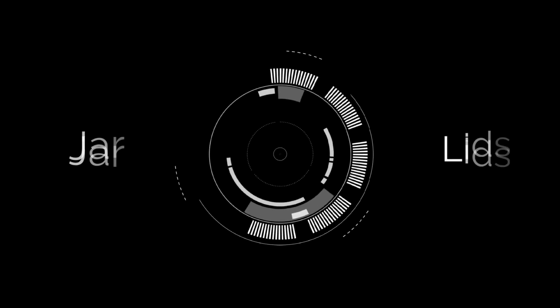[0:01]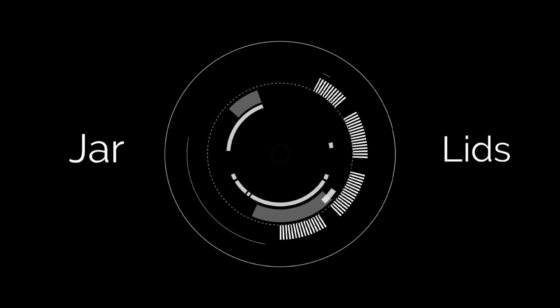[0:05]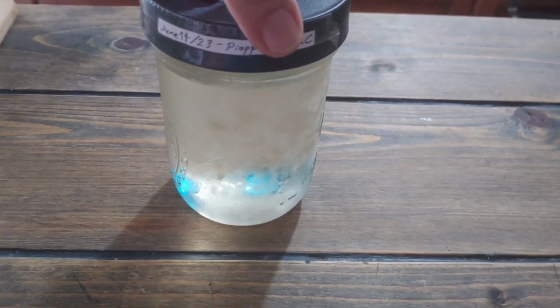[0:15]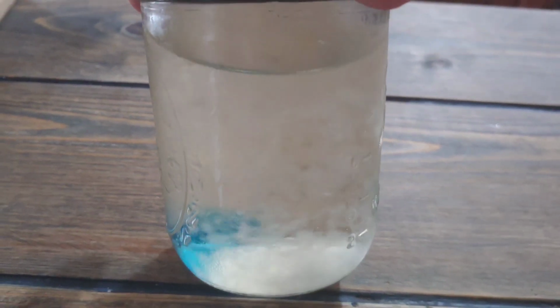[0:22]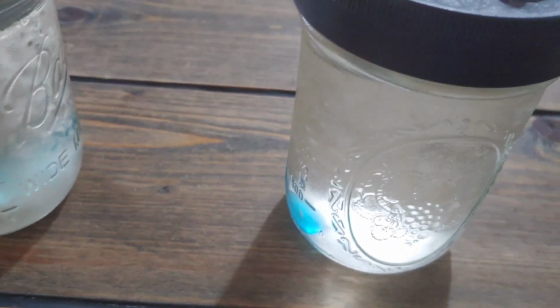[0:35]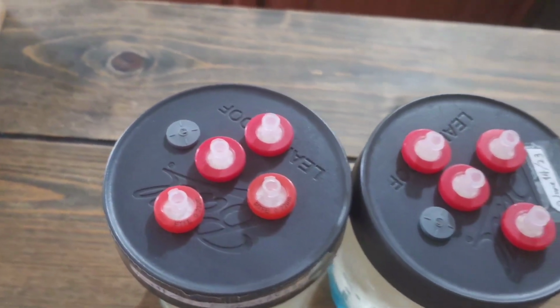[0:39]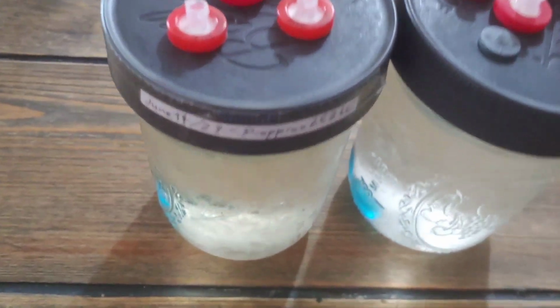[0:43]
All right, I'm gonna talk a little bit about liquid culture. First, I'm gonna show you how to make your modified lids for these jars. And it's not difficult at all.
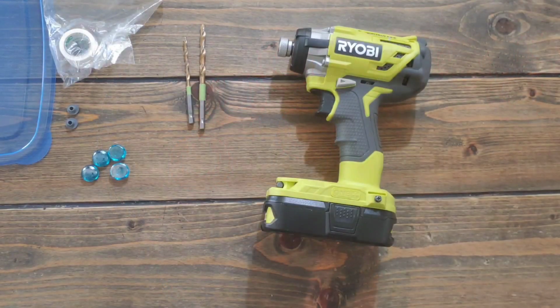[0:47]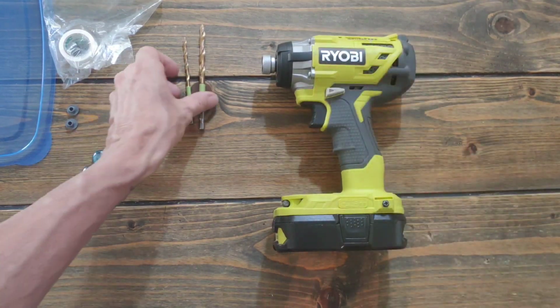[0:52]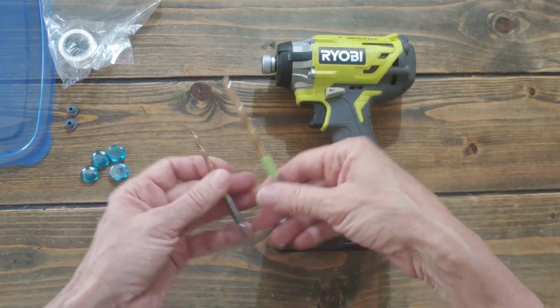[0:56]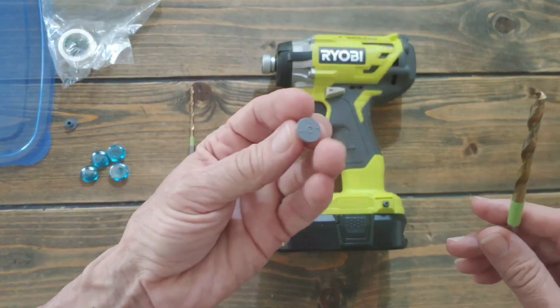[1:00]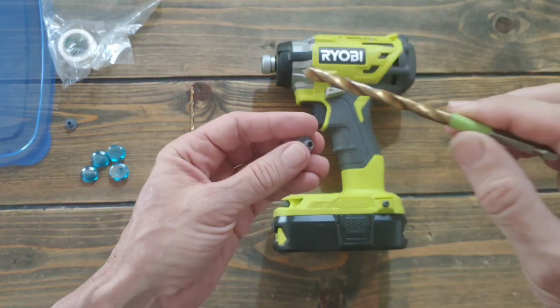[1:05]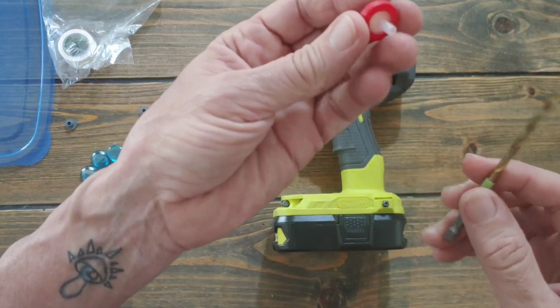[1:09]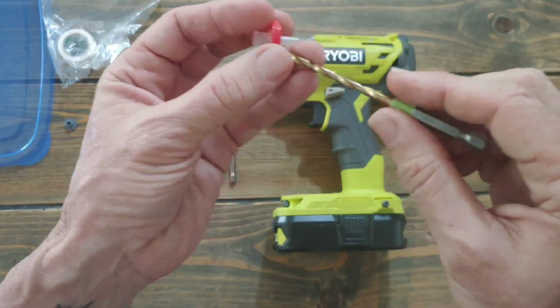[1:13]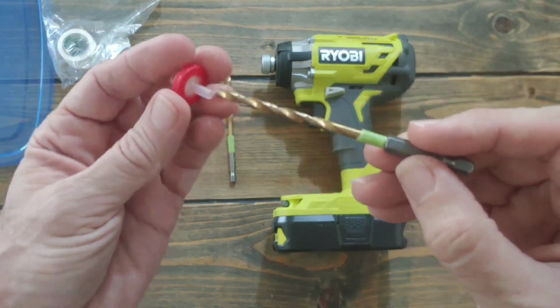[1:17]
Now you will need any drill, some drill bits. For these smaller injection ports, I use a 1/4-inch drill. And for these smaller filters, this, it's worn out. I think it's a 5/32.
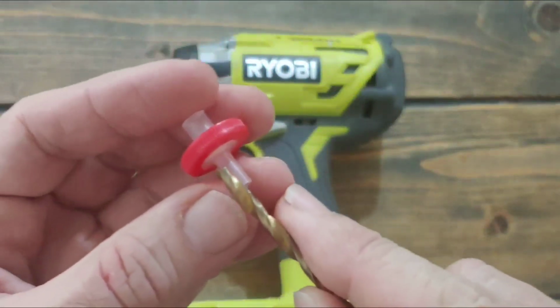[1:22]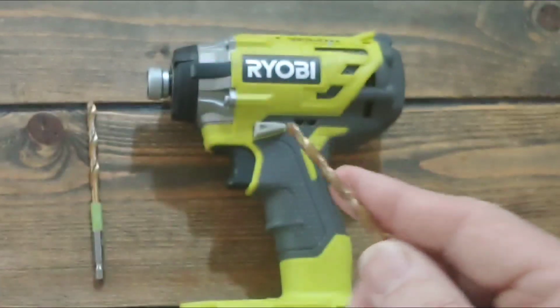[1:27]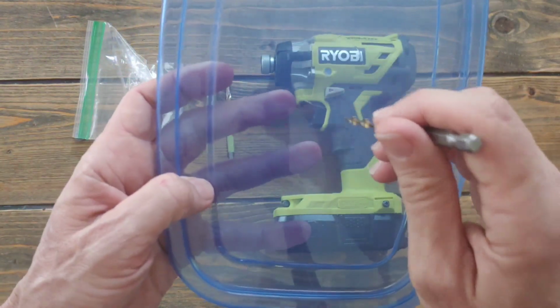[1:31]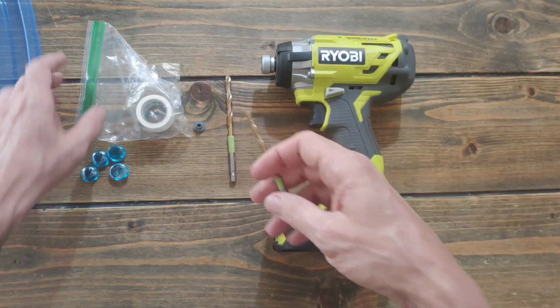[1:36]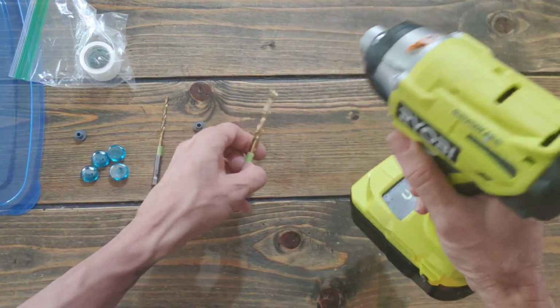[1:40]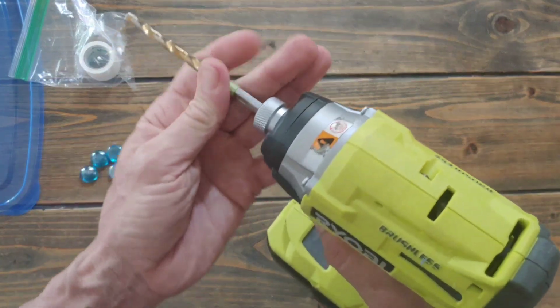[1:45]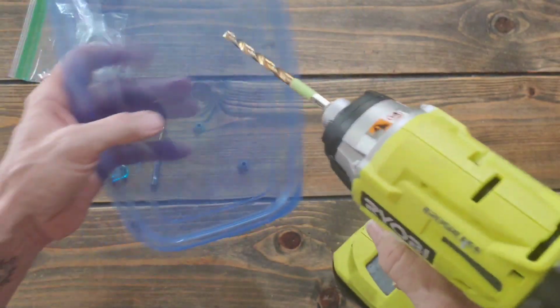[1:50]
But the way I figured out which one to use was I just eyeballed it like that, put it on top, and then I tested it in any old piece of plastic that you can throw away, of course. So I'm going to show you how to test it. Let's say I still didn't know what size I needed to use, and I eyeballed it and I thought it was a 1/4-inch.
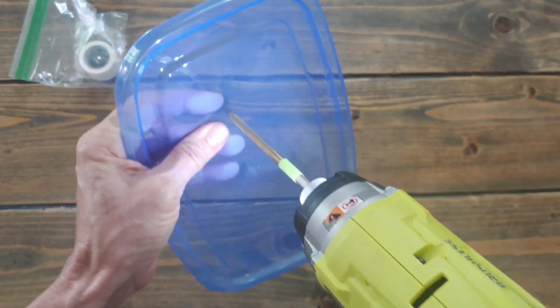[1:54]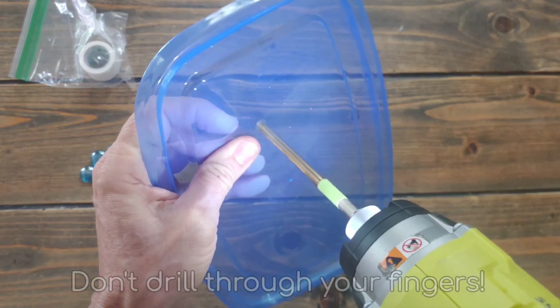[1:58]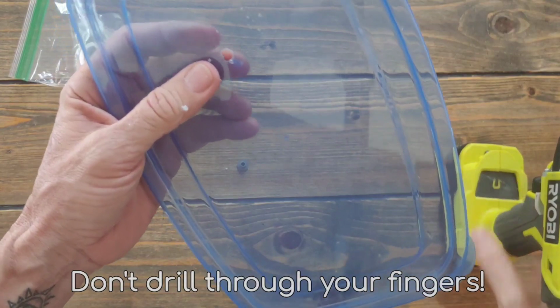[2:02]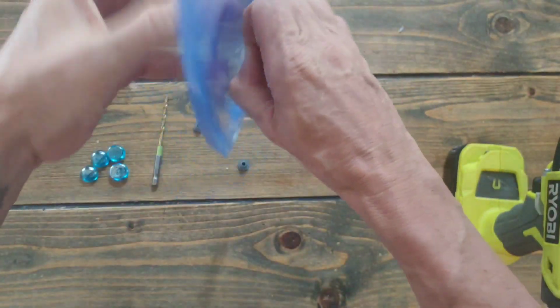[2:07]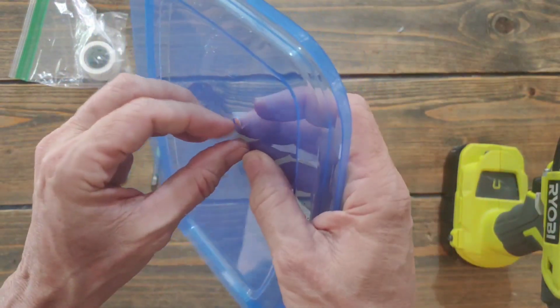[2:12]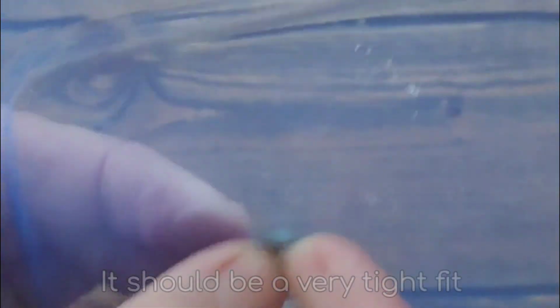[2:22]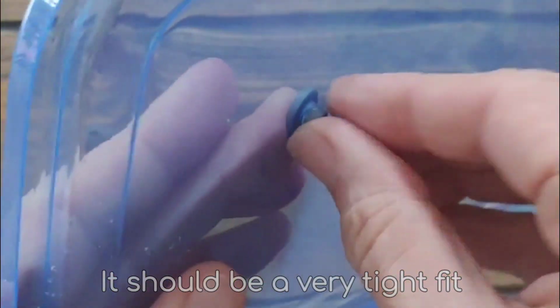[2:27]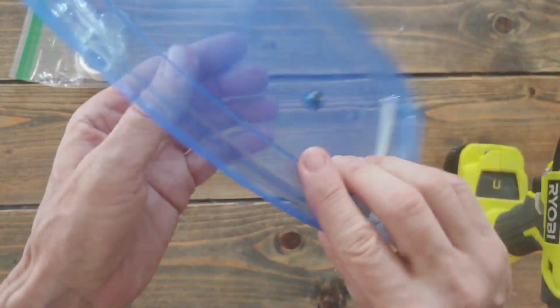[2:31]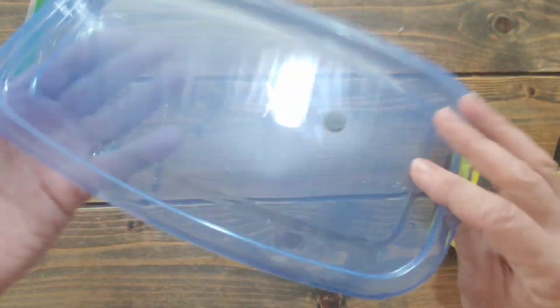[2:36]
Don't drill through your finger. Take your time. Clean up the little plastic bits. And now, take this thing, poke it through. Press, and then you pull on the other side. Just pinch it and pull. And that's it, it's perfect. So now I know 1/4 inch is good for this.
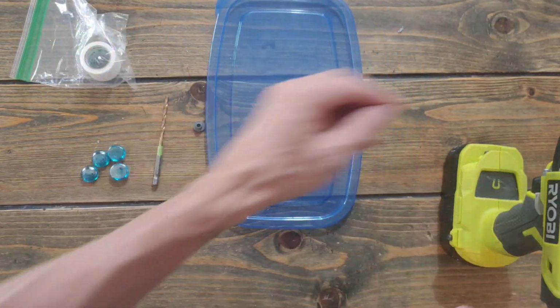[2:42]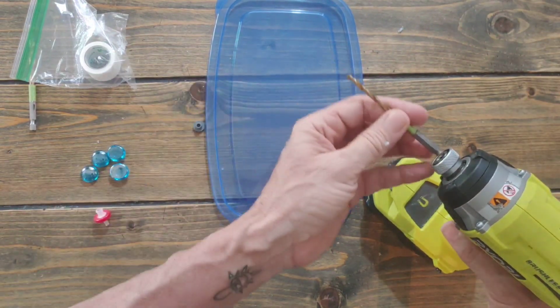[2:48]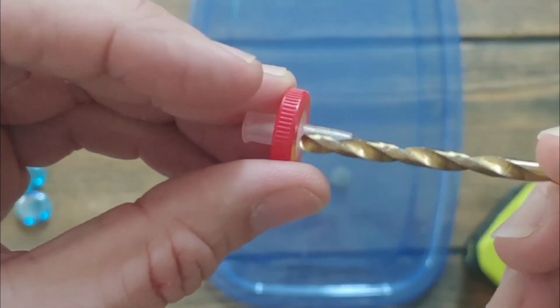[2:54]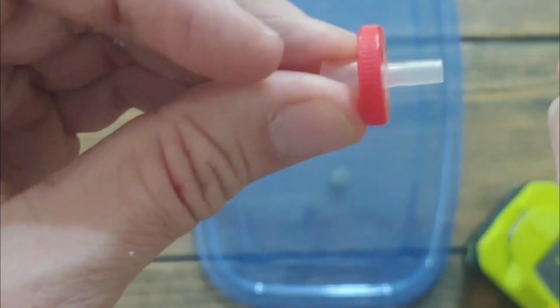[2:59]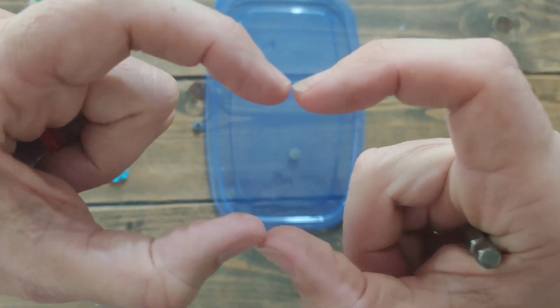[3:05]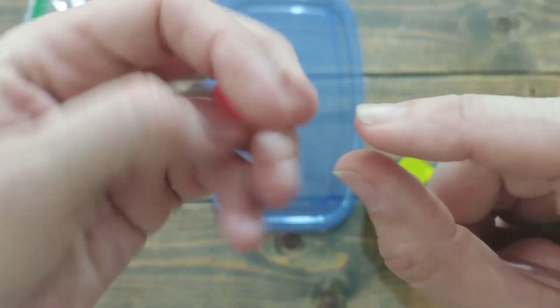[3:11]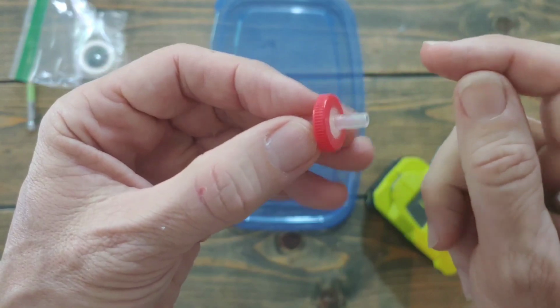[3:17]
Same thing for the other one. Say I eyeballed it and I think this is a good size. You can't go too big because you probably can't tell, but it has a little divot like that. This straw looking piece, this little cylinder, has a little divot, and that clicks into the hole if you do it right, which keeps it in place. You don't have to glue or anything.
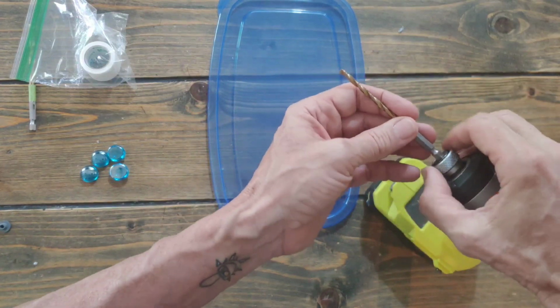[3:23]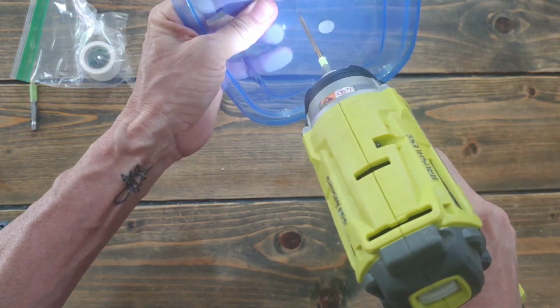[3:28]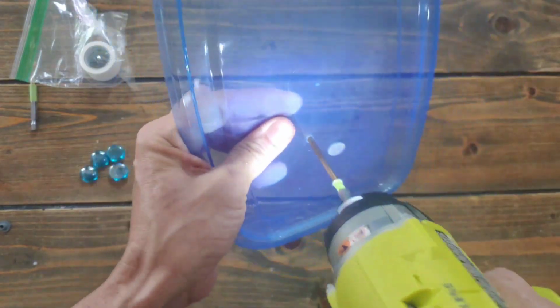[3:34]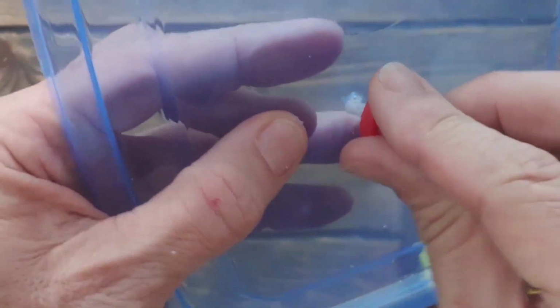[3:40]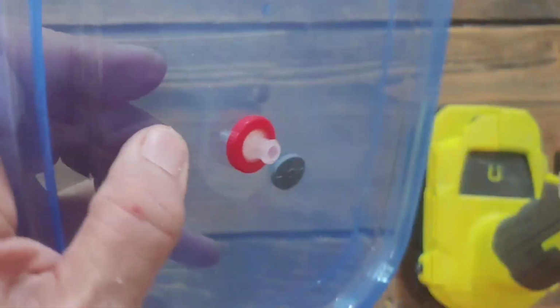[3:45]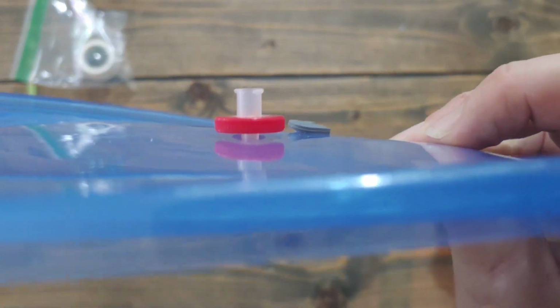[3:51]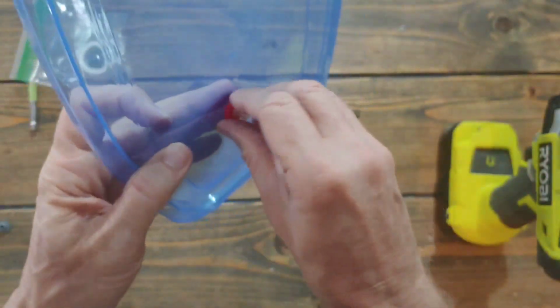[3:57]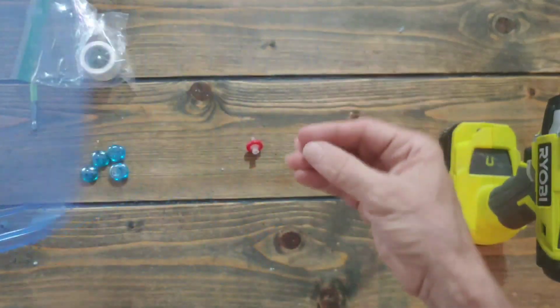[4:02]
So let's say we want to test this drill bit. Come here. Don't drill your finger. We press it in. And you can feel when it clicks and it doesn't want to go any further. See a little space there? It's that easy. So then this you can just pull off. Same with the filter.
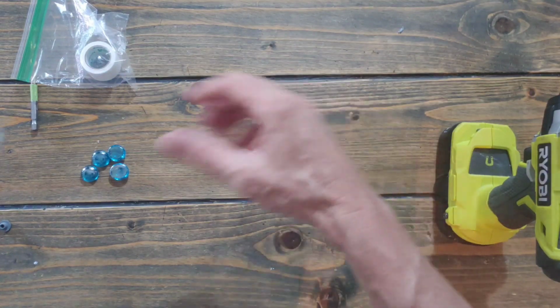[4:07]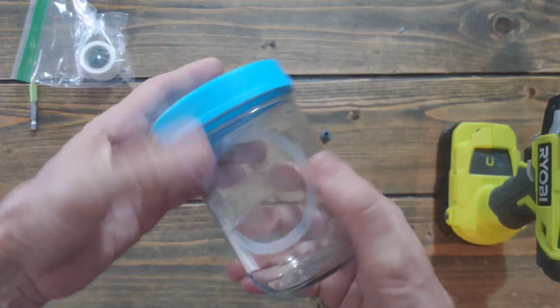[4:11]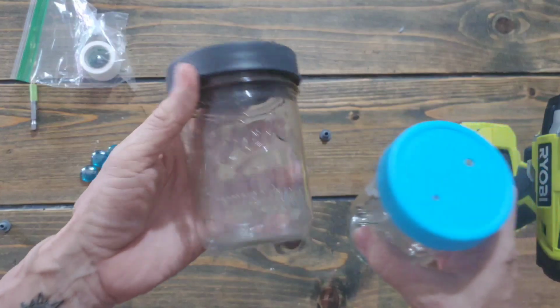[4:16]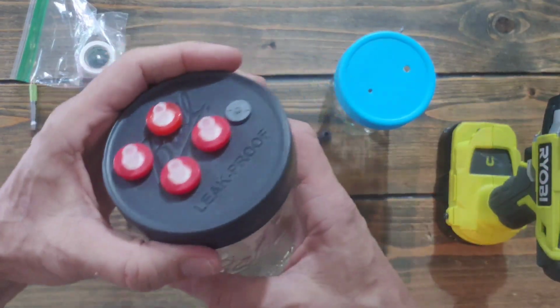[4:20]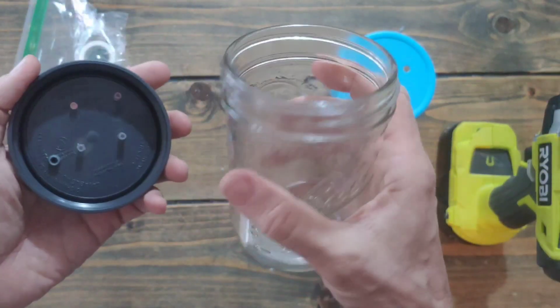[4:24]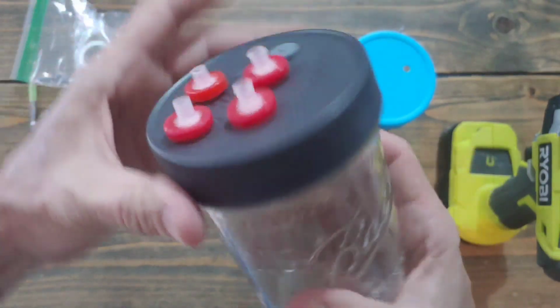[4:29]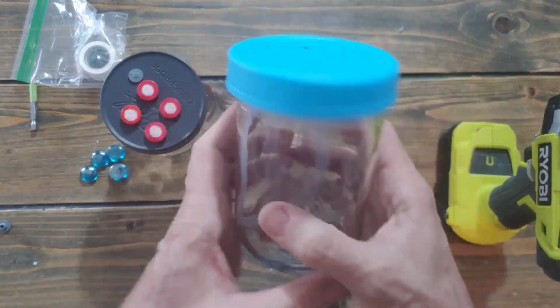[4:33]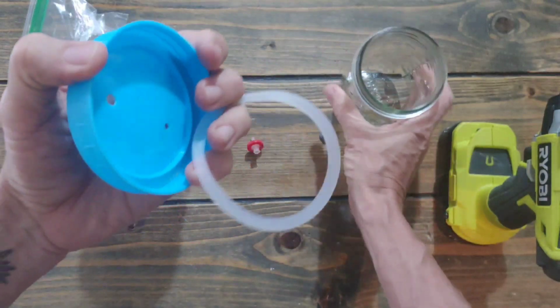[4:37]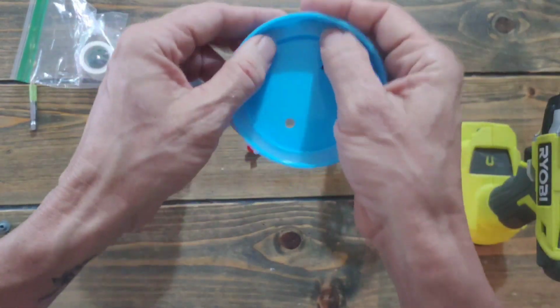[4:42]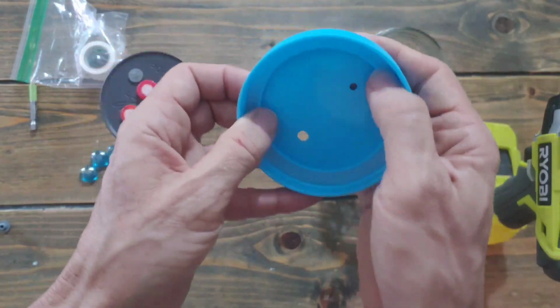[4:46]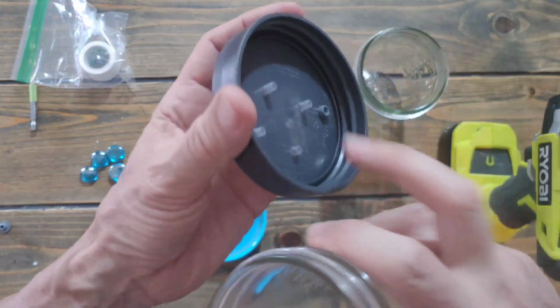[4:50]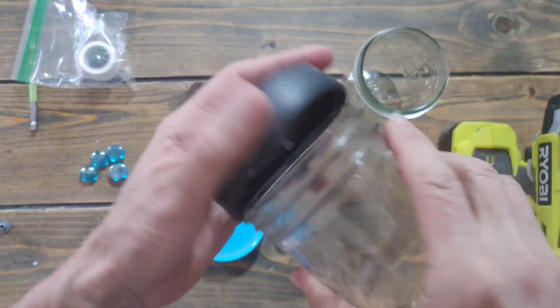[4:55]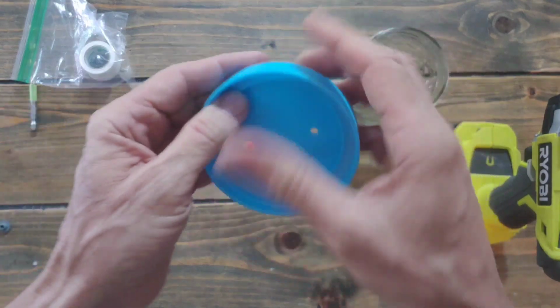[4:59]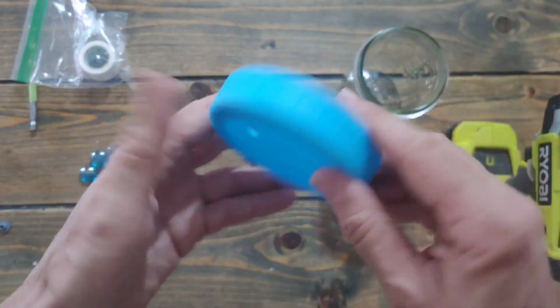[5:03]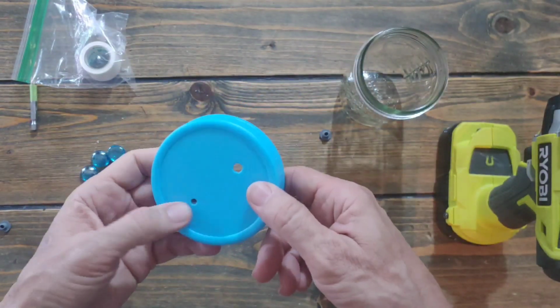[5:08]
Now, a thing about jars, you can get any old jar, but I've found if you go with the best brand, Ball is the best. The jars feel stronger, and the lids screw much tighter and they never leak. These cheapo jars and lids, I'm never buying these lids again because look, these need a silicone O-ring, and these just have a plastic lip. Well, believe it or not, the plastic lip seals way better than this O-ring. And you remember, we're putting this under pressure, under tons of heat, so it's not good. But I'm going to use this to demonstrate.
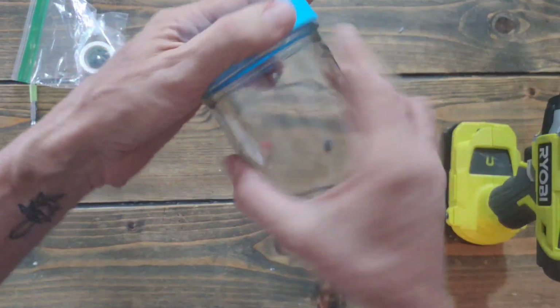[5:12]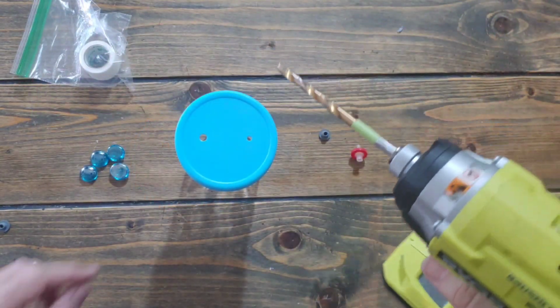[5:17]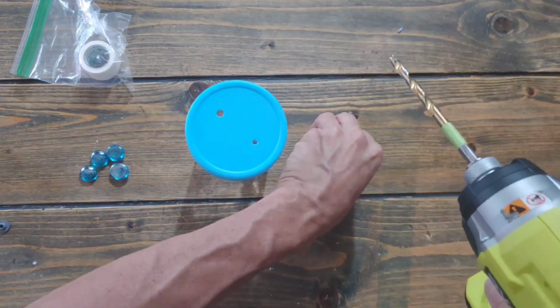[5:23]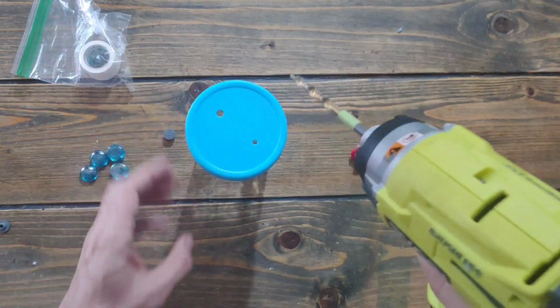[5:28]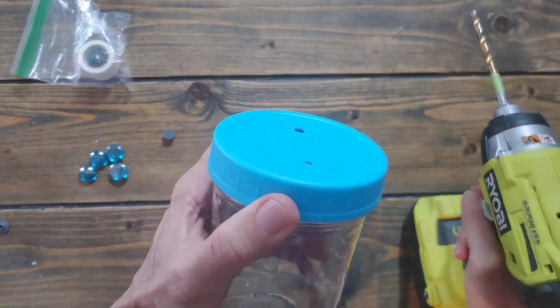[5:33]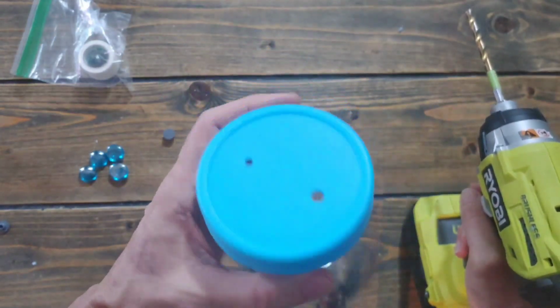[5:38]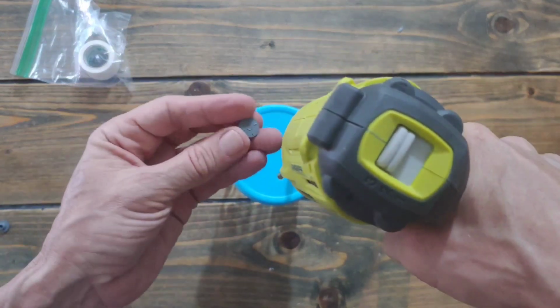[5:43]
The best way to make a hole in this thing is to put the lid on the jar. We're going to make another quarter inch hole for another self-healing injection port. Let's say that I'm going to use this for, because you can use the same jars for grain spawn, as well as liquid culture. But if you're going to use it for liquid culture, you may want to have more than one injection port.
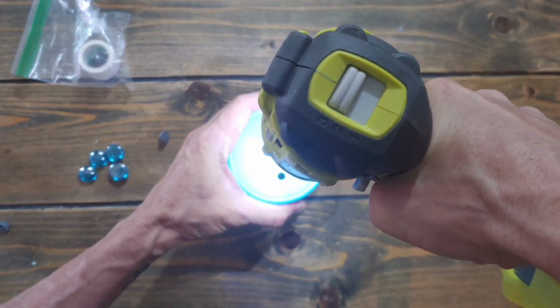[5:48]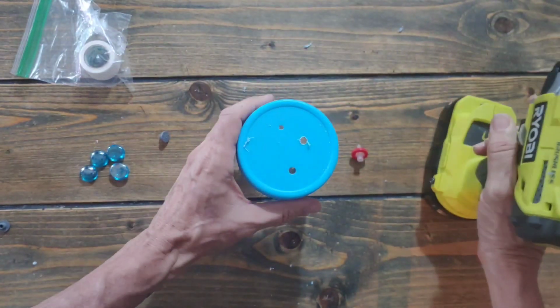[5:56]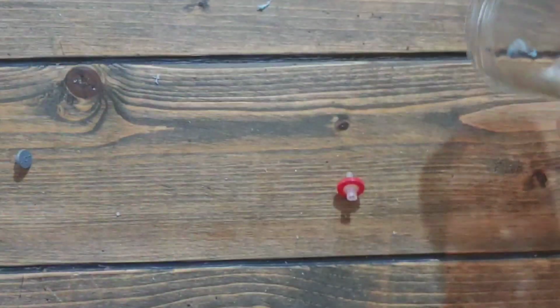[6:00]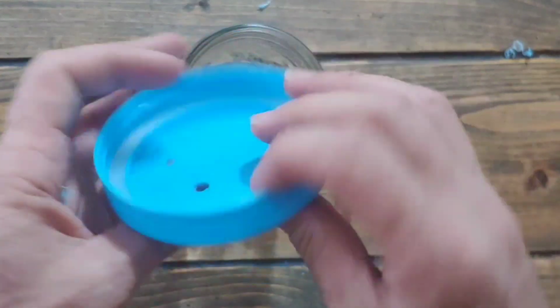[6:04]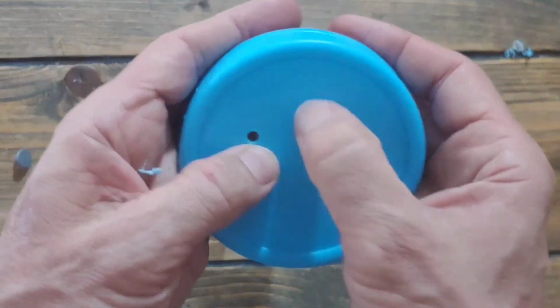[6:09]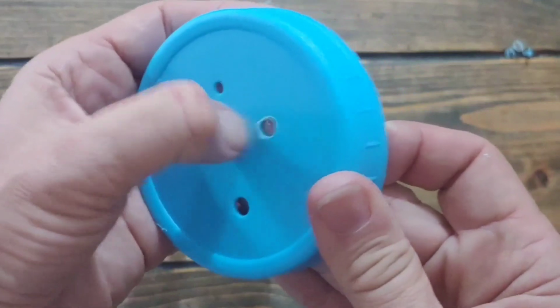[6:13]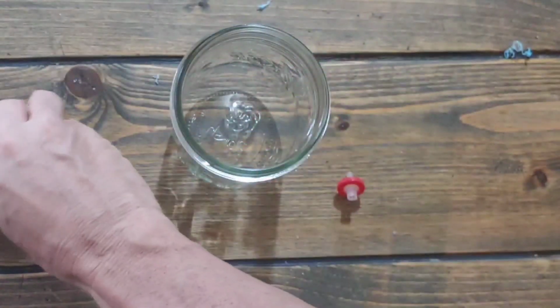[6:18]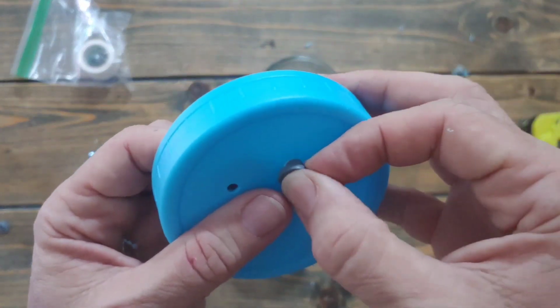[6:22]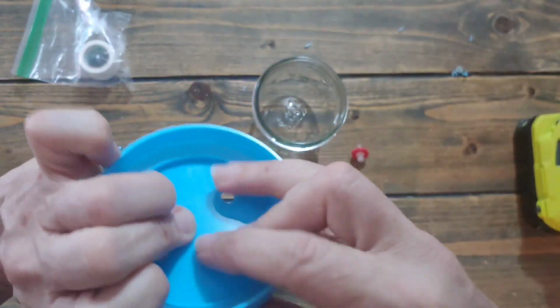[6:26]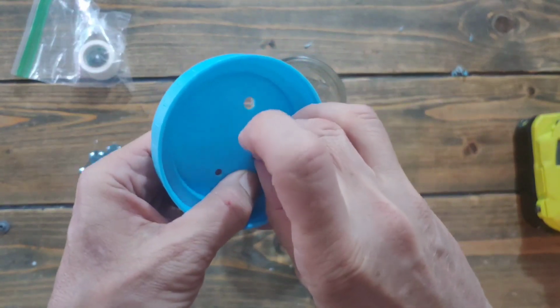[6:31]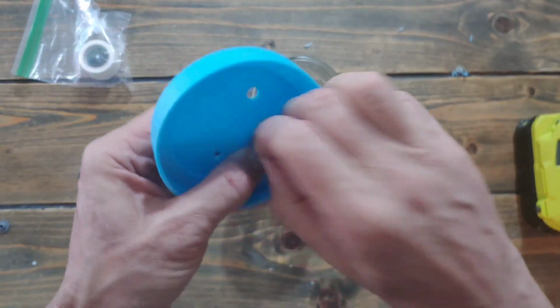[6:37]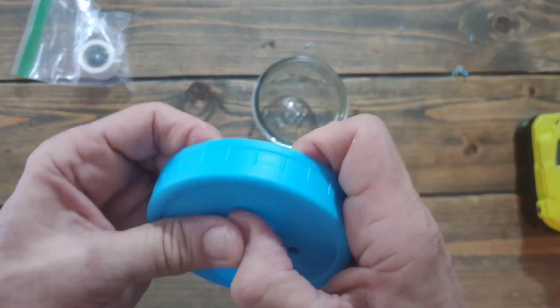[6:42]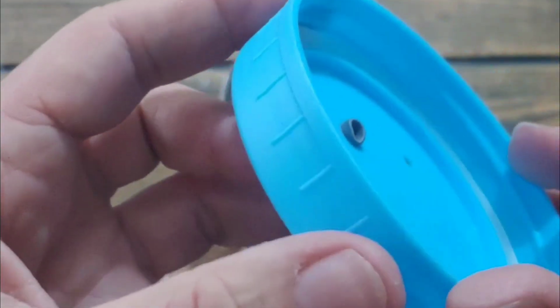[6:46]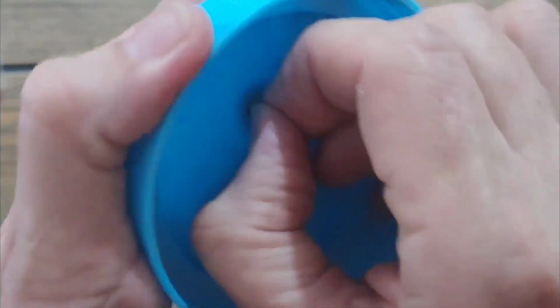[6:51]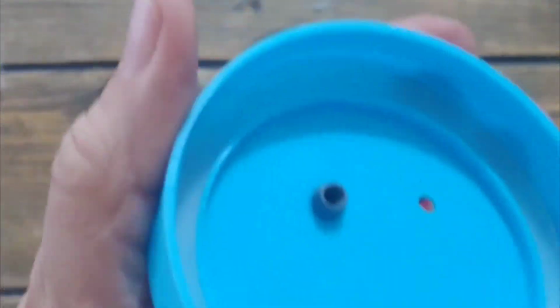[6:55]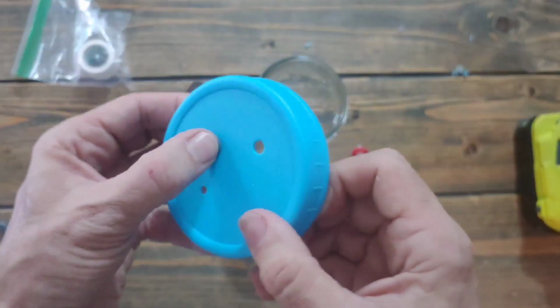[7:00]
That's it. So then you can scrape off the pieces of plastic a bit if you want. It's not a big deal. Won't hurt anything. Then again, you press it in. And pull on the other side. This plastic is thicker, so it feels a bit tighter. Then when you press right in the middle of it, and see, it's kind of wonky. We don't want that. We want to pull on it. There we go. Pull on it. Look how pretty that looks. Perfect.
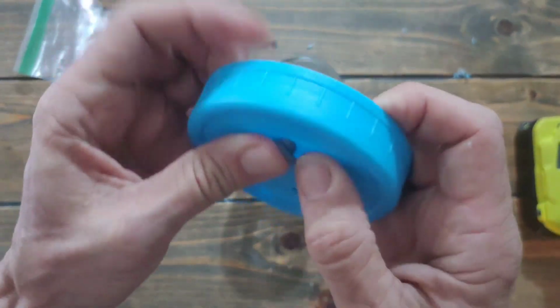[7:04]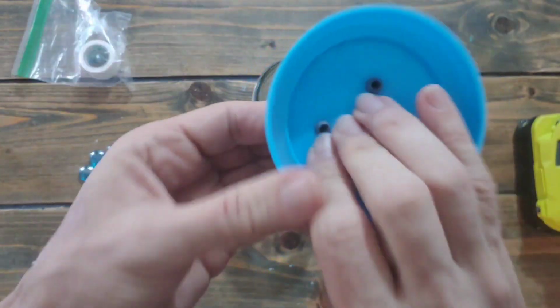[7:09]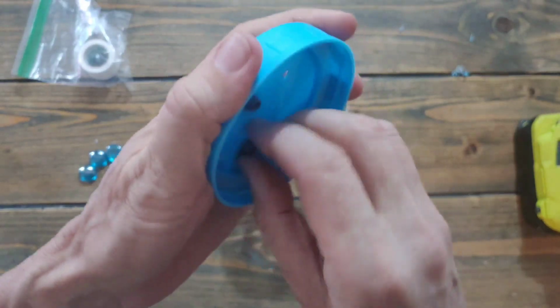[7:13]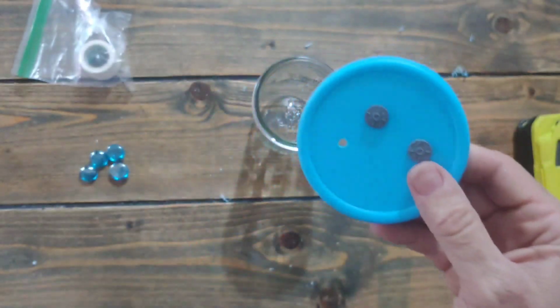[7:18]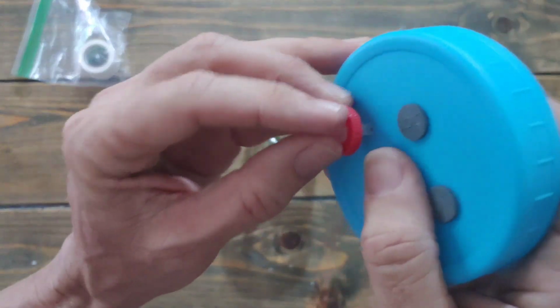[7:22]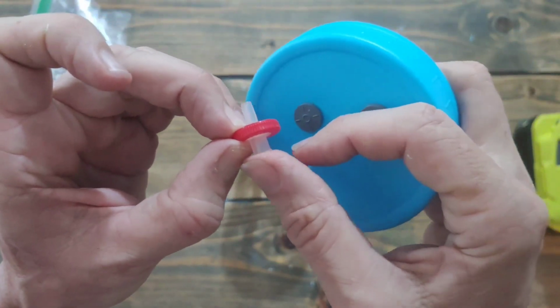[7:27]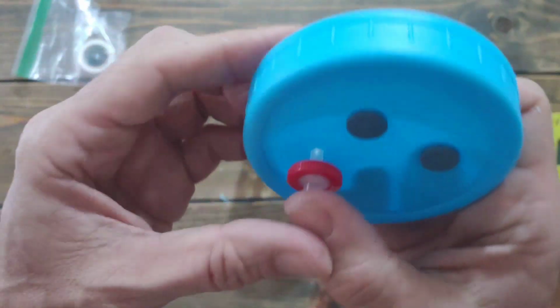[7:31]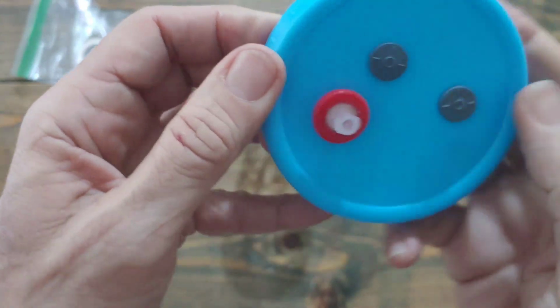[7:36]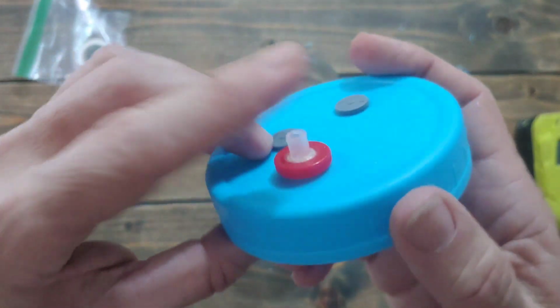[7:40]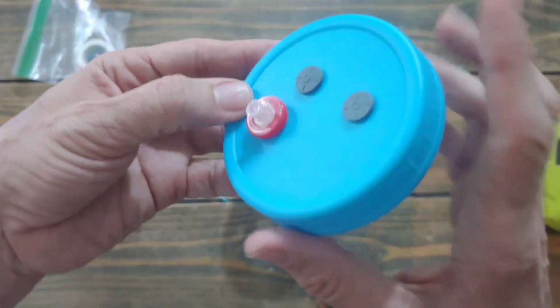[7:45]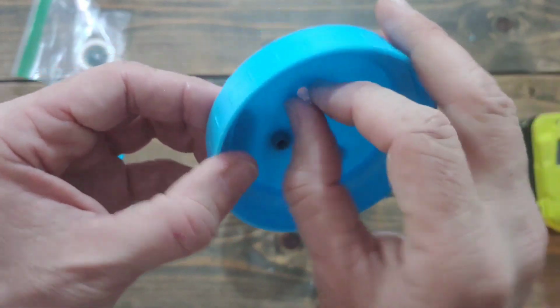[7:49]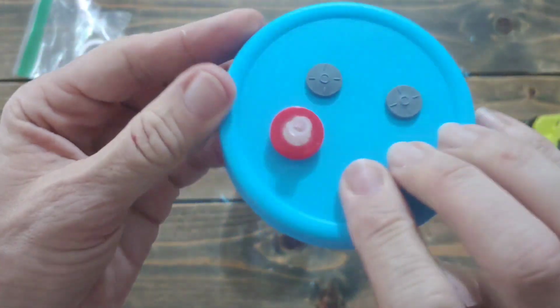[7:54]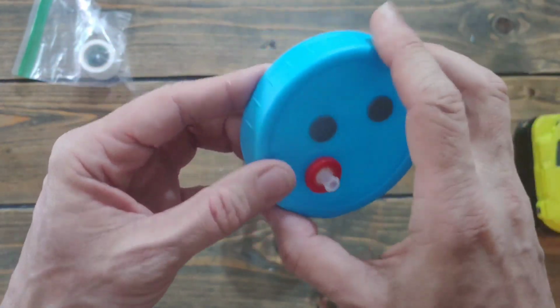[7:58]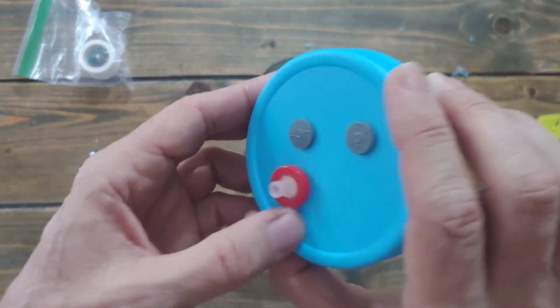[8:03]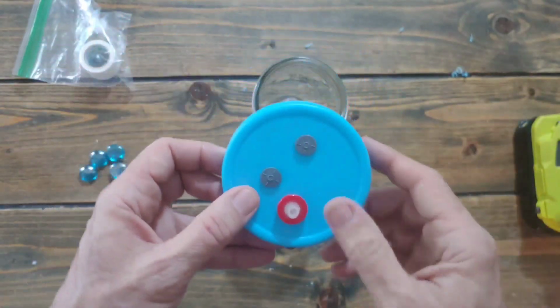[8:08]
So we have another one here. Same deal. Pull on it. That's it. Now I want you to notice, when I put this in, don't push on this side. Always push on the top, because you don't want to put stress on that. Put it in there, press. Snapped. Snap right into place. Looks a bit at an angle, but it snapped, so I don't care. And I'm pressing here, it does not want to come out. I have to use pliers to pull it off of another lid, just to do this demonstration. And that's it. You can make more holes and put more of these, like here.
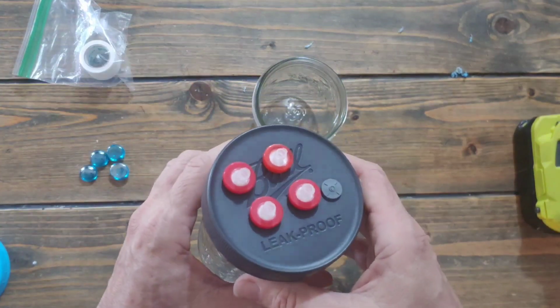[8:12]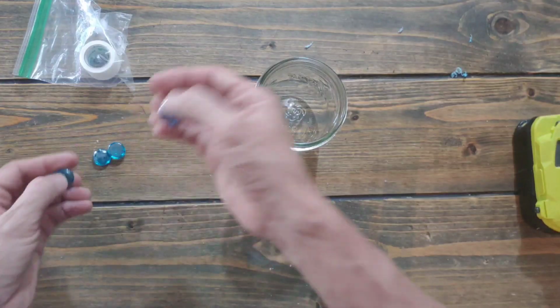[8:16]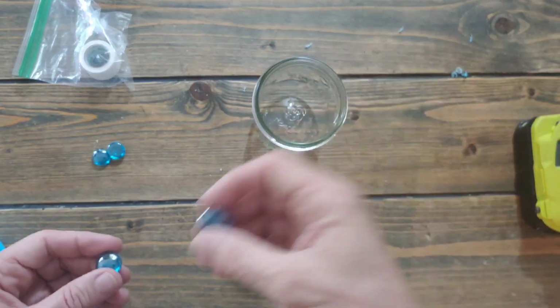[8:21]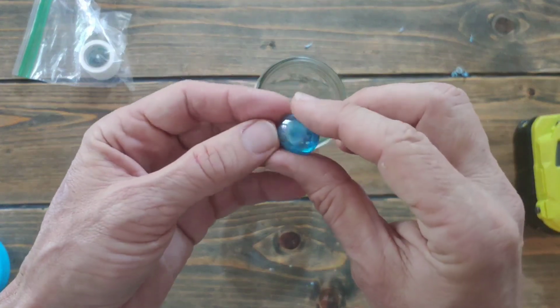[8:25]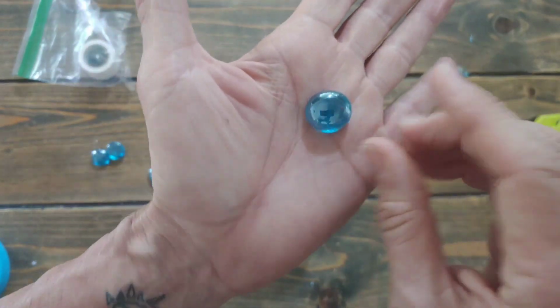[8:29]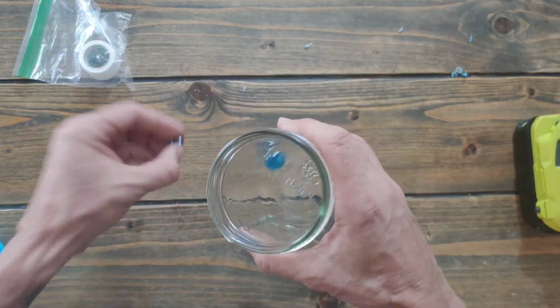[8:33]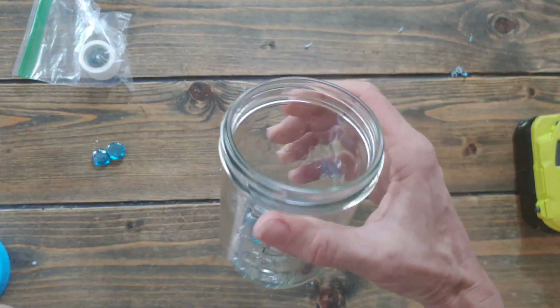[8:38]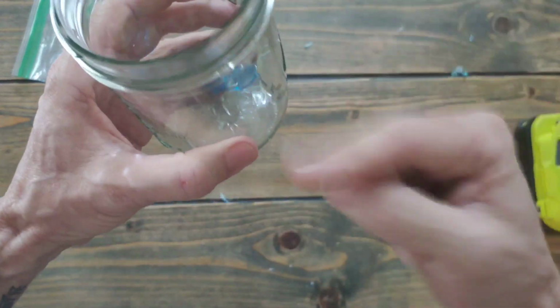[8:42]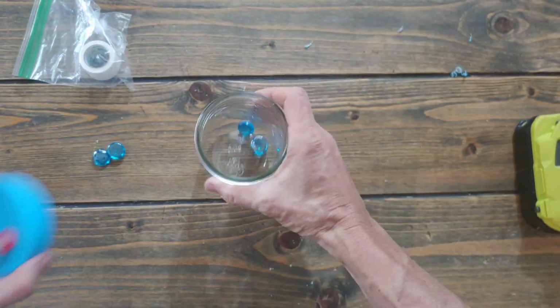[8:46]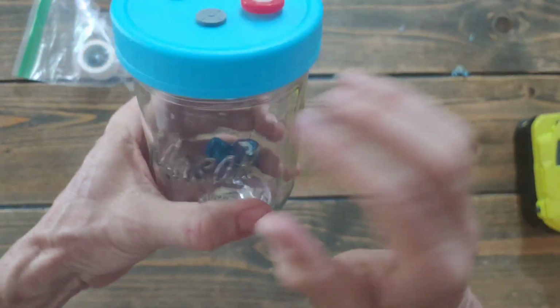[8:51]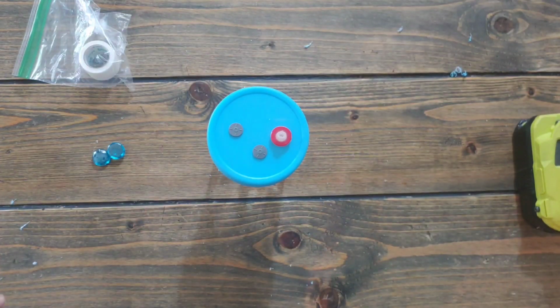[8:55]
Very important, you can use glass beads. Glass is good. These are not really marbles. They're flat, decoration. So you put one or two in there. And I'm going to show you how to make your liquid culture later. You want this in there so it helps mix it and break apart the mycelium. So you would put that on, put this on, and pressure cook your liquid culture in here with the aluminum foil on top. I'm going to show you that in another video because this is getting long.
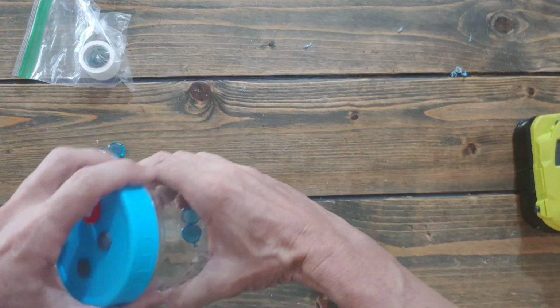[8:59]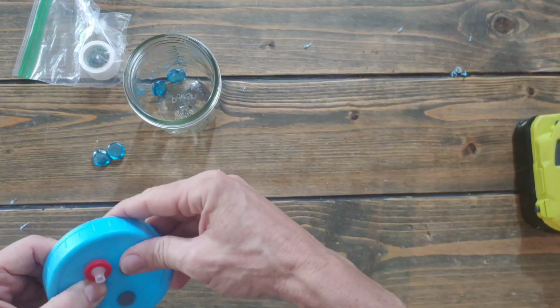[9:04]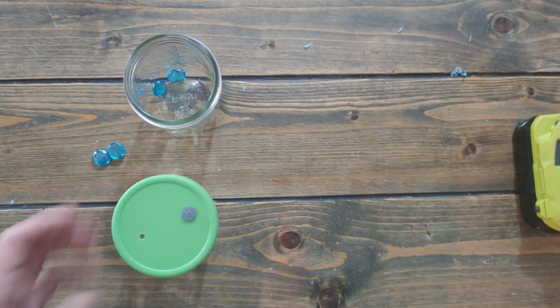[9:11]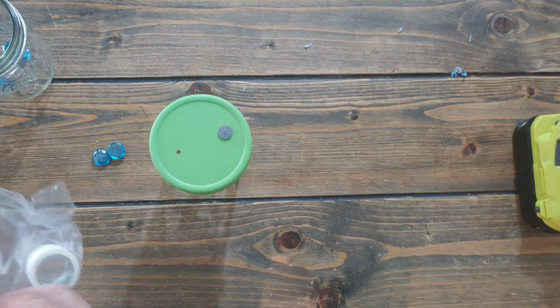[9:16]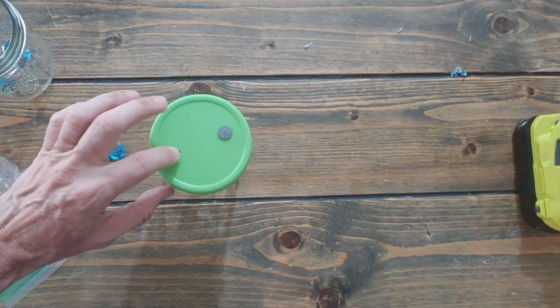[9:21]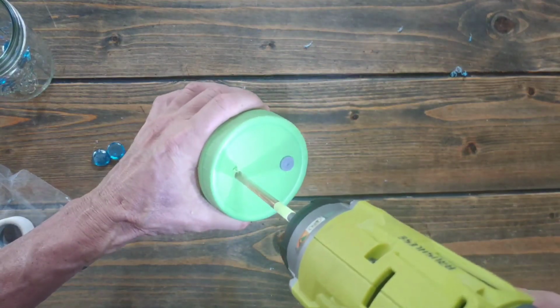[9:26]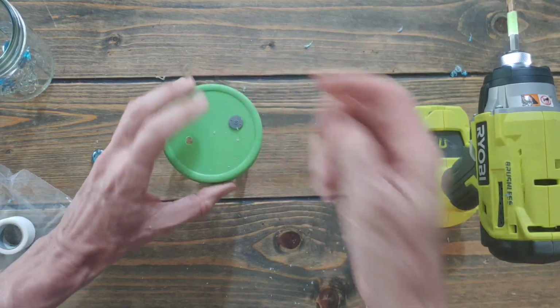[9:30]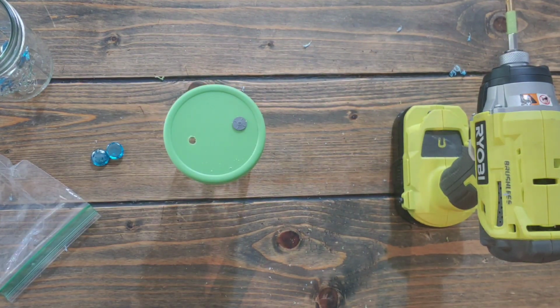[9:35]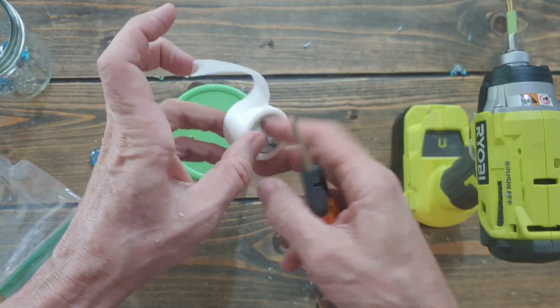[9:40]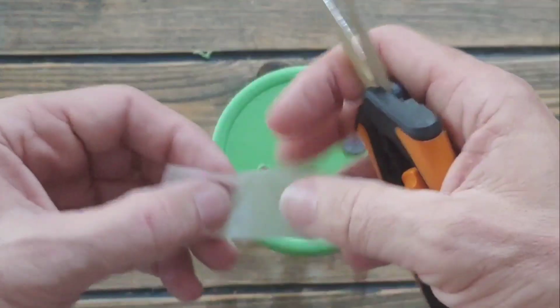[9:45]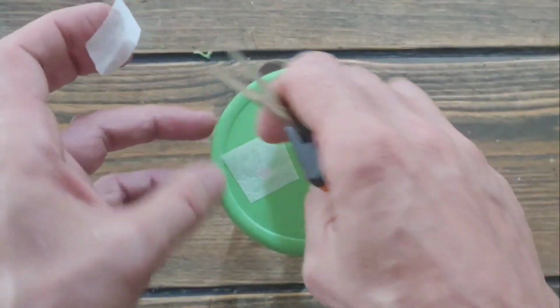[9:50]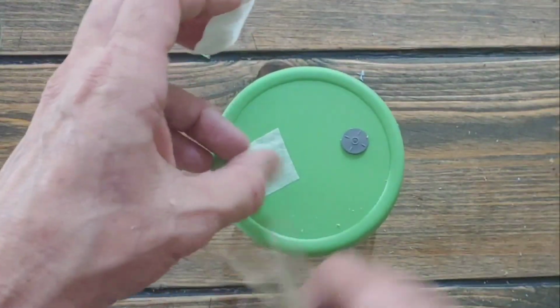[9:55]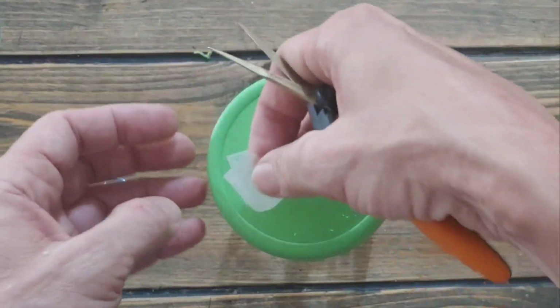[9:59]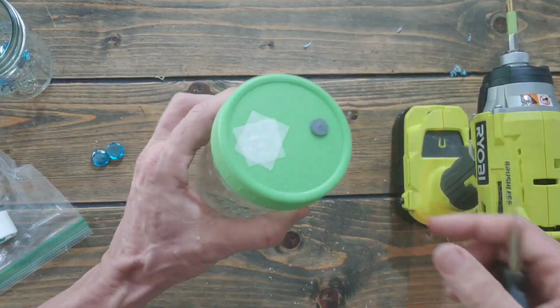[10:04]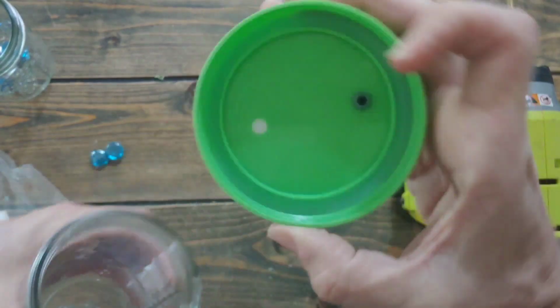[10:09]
One other thing is, let's say that you don't have these filters. You should have the injection ports. You can get all this from Amazon. They're not expensive. I recommend you use them. You can make a quarter inch hole instead of this small one. Let me make a quarter inch hole here. And then get some handy dandy micropore tape, which we know and love. And put a double layer. Get it more centered. Double layer of micropore tape over the hole, if you don't want to spend the money.
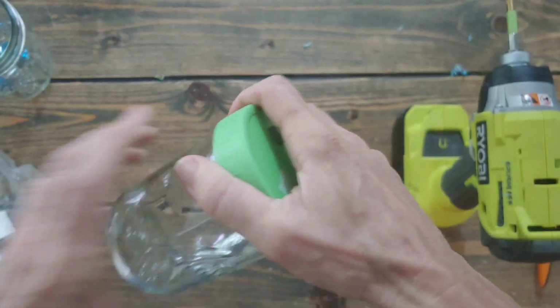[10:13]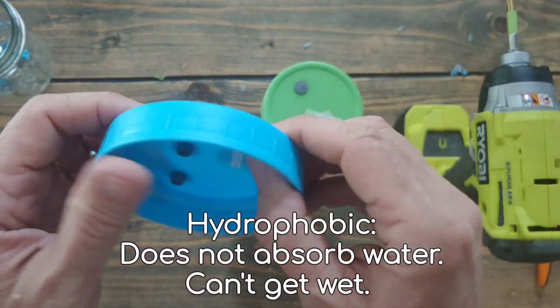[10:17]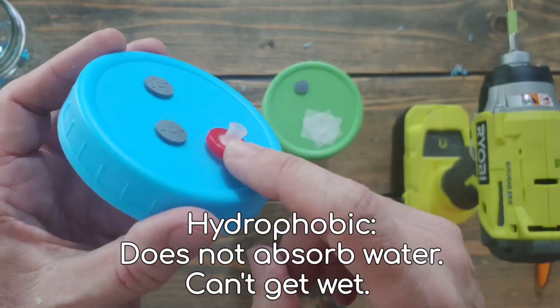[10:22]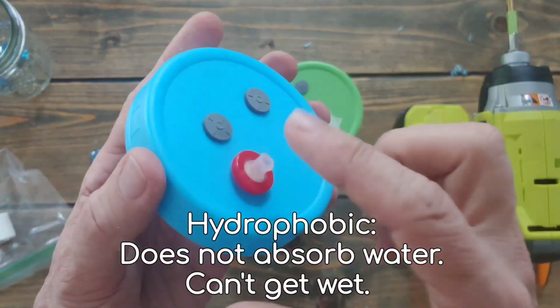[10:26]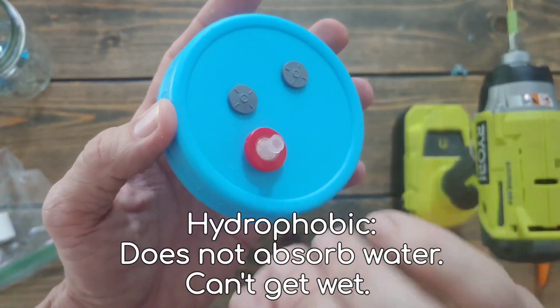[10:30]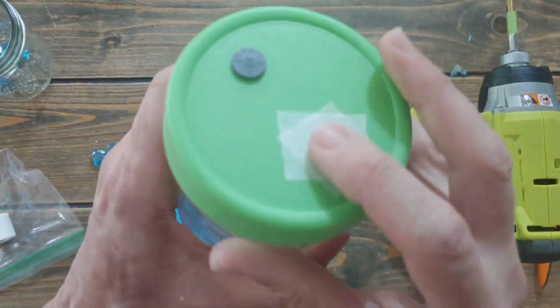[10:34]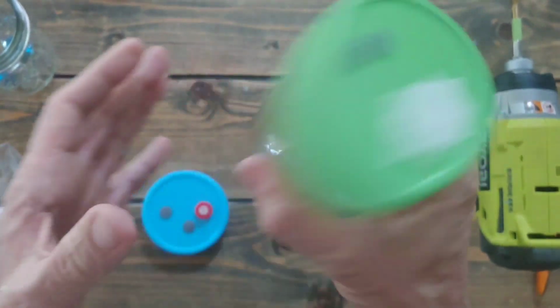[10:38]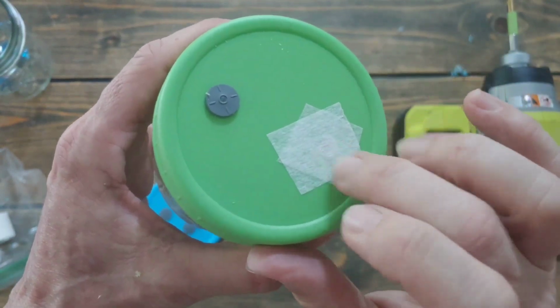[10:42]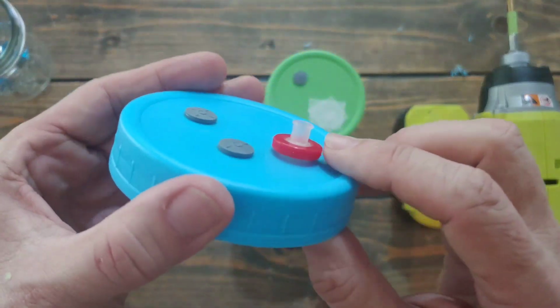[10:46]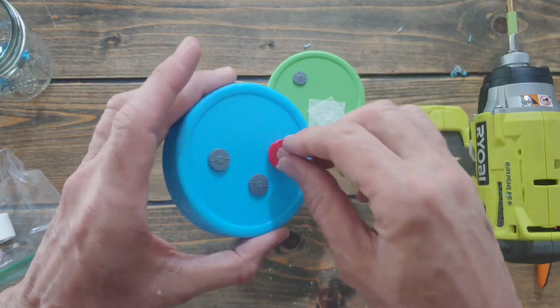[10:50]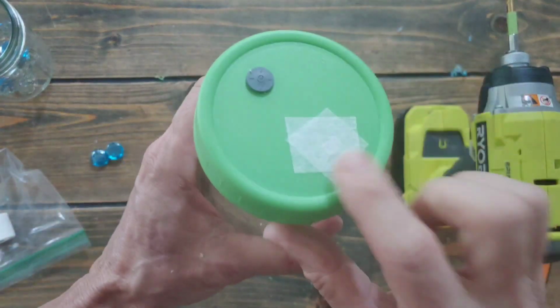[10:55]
Now, why are the other ones better? The ones that I have on my list, if you order them from anywhere, make sure they say hydrophobic, which means phobic means want to run away from. So the hydrophobic ones will not get wet, literally. These get wet. So if you have liquid culture in there, of course liquid, when you mix it and stuff, this gets wet. They work fine, but I'd rather have something that doesn't get wet. These have been working great for me. You spend the money once, you can use them over and over. But this is another alternative.
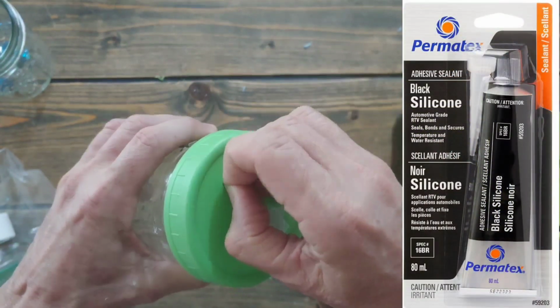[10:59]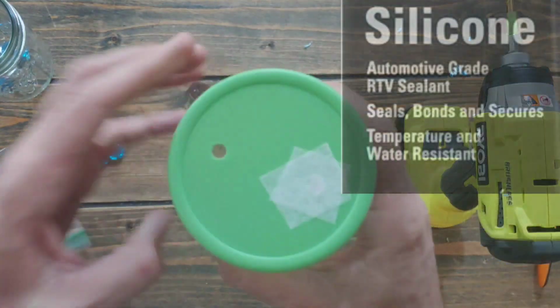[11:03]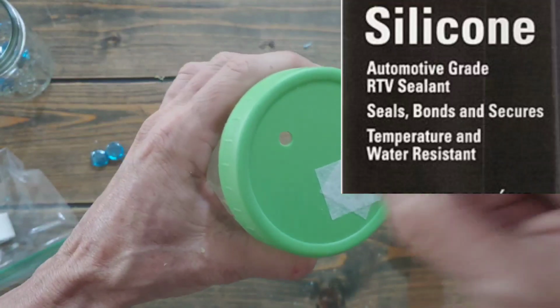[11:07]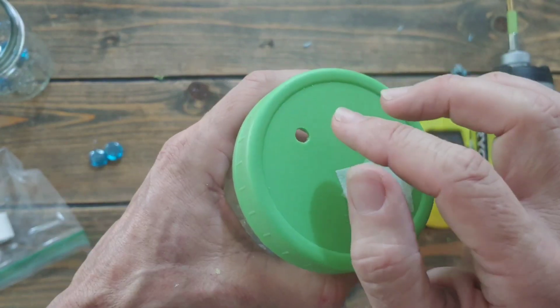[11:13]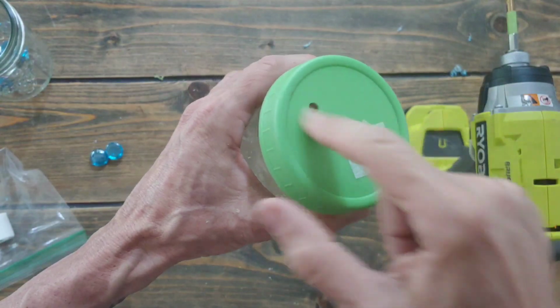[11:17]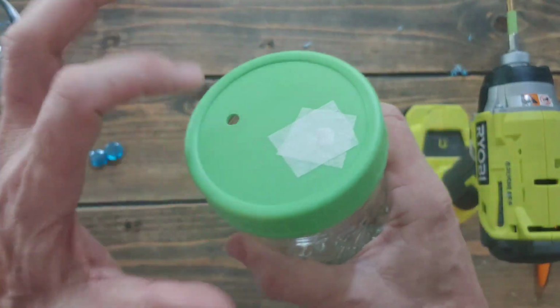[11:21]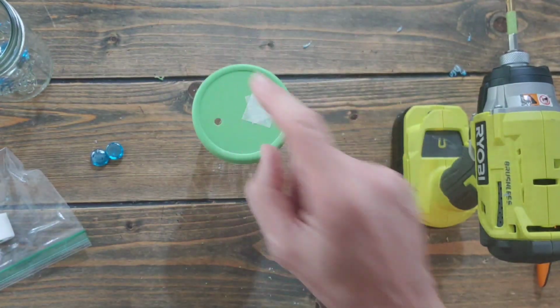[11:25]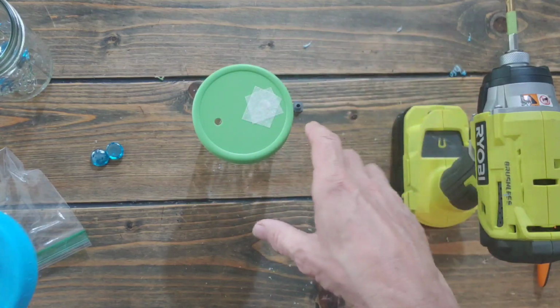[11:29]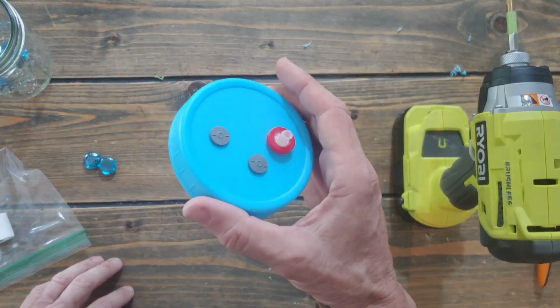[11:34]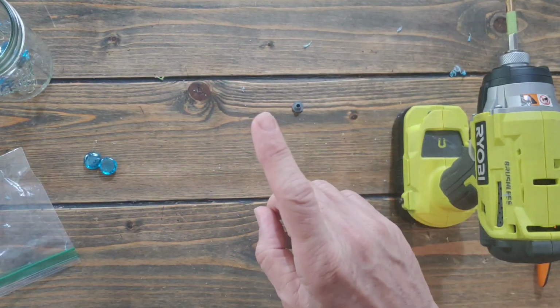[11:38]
You can also, instead of this, use RTV, which is high temperature gasket glue, and you put a dab in there, finger or a little wet paper towel, you flatten it, and then you can use that as a self-healing injection port. Cheaper, but you have to wait for it to cure. Messy. Again, this with the gasket glue works great. Cheaper way to do it. This to me is the preferred method. Now we would go on to the next step, which is actually making the liquid culture.